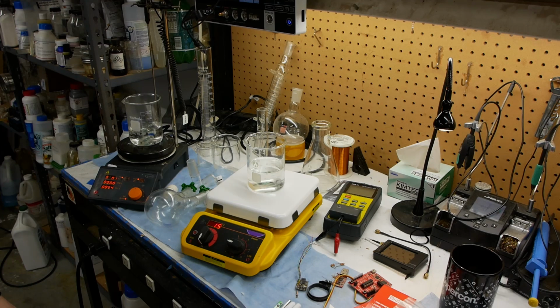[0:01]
Today on Applied Science, I'd like to show you this proof of concept that friends and I built years ago. We aren't going to do anything with this, so I'm going to open source the code and schematics here.
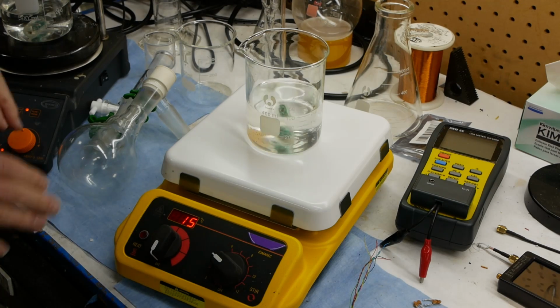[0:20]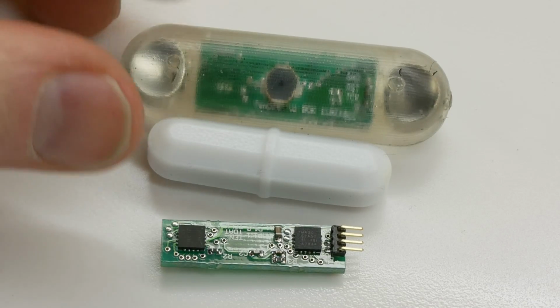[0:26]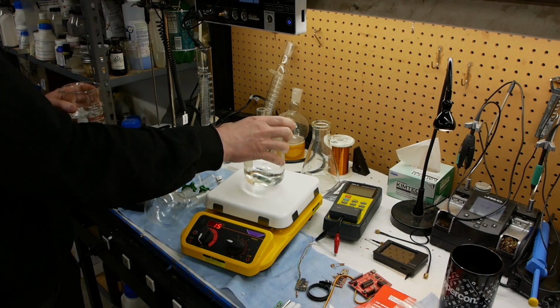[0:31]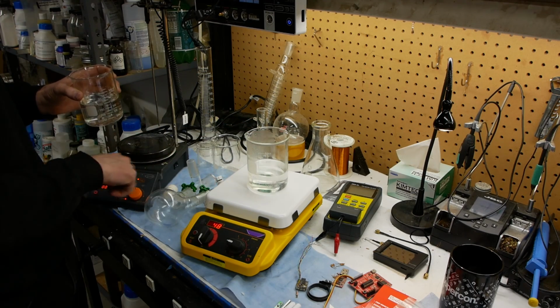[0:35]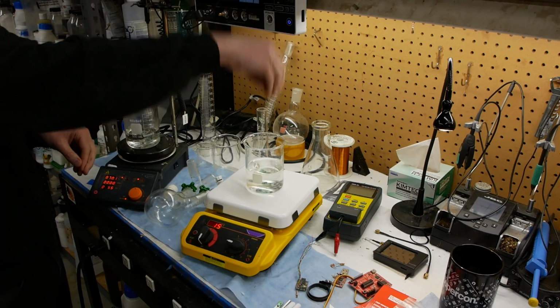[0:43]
So what is this? This is an off-the-shelf laboratory stirrer hot plate that I've outfitted with an RFID reader in the base and a temperature sensing RFID tag embedded in the stir bar. If we put a different beaker on with another stir bar in there, it reads the new temperature of the liquid. This is warm water. And then we go back to room temperature water, it reads the tag and comes back down to 15. So this solves the problem of needing an external probe that hooks around and gets in your way.
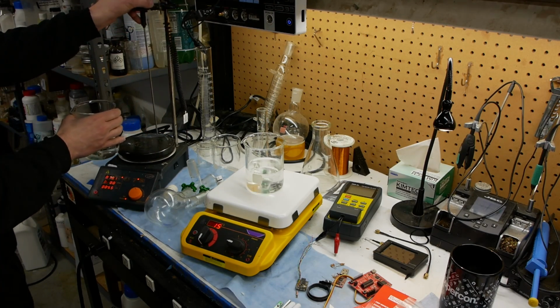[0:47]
This is kind of the state of the art here. Normally what you have to do is unhook the probe and then put the probe down into the liquid like this. And as you can see, it's really quite janky and sort of a pain in the butt. And more than just an annoyance, you can see I'm fiddling around with this. It is quite annoying if you're in the lab and you actually have to take a beaker on and off quickly. Saving just that little small amount of time is worth quite a lot because you have to go through it so many times.
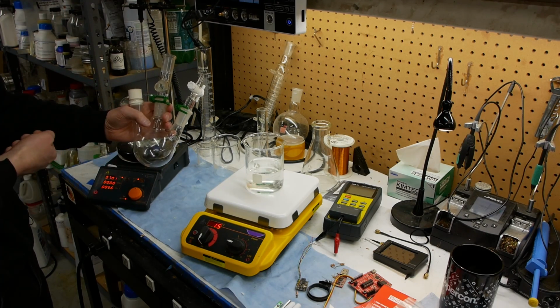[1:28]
Also, if you're doing air-sensitive chemistry, you might be working with a three-neck flask like this, and you might have a condenser hooked to here, and inert gas hooked to here, and addition funnel hooked to here, and now you're out of ports to put your temperature probe in at all. So being able to measure the temperature wirelessly saves you both time and makes your ability to do experiments much better.
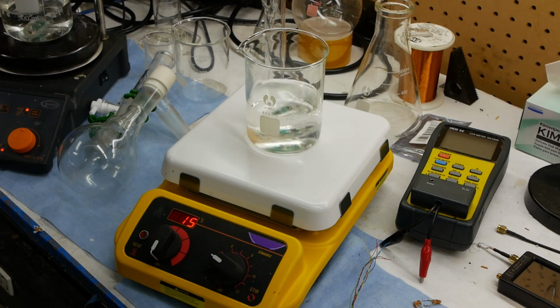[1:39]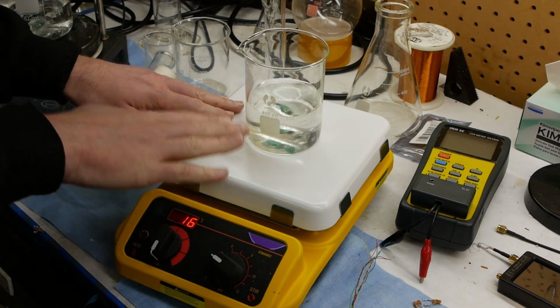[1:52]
Once we've invested in putting some electronics into the stir bar, you of course can sense all kinds of other things other than temperature, things like pH or ORP or turbidity. But even something as basic as traction on the stir bar, we can sense. If you speed up a stir plate, it stirs faster and faster until the bar launches off because we've lost traction. It can't spin that fast. With our method, the machine now knows that it's not in radio contact with the bar, and you can program the machine to automatically slow back down and catch the bar again. And now that it's lined up again, it's reading out.
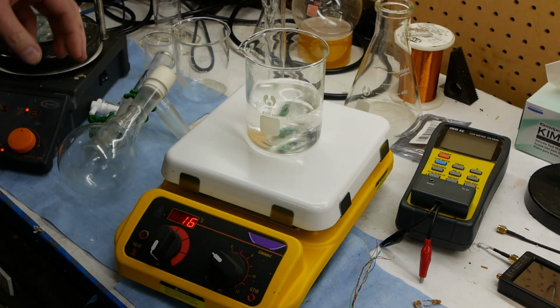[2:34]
As we'll see, we're going to do a teardown a little later. The read range and the concentricity of the coils together, the transmit coil and the tag coil, have to be pretty good. So you could sense that it's lost traction with other sensors or magnetic field sensors. You can see it's not hooked up anymore. But this is one way of just very quickly detecting whether the stir bar is still in magnetic contact with the motor.
Another idea we had is that you could measure the viscosity of the fluid by looking at the magnetic slip angle. I think some stir plates might actually do this by looking at the torque put into the motor, but this would be a more accurate way of doing it. In the stir bar, you could put a Hall effect sensor to find the magnetic slip angle to see how thick the fluid is.
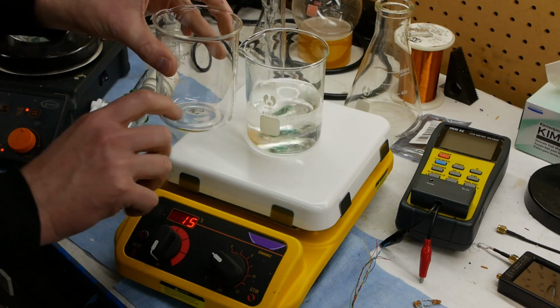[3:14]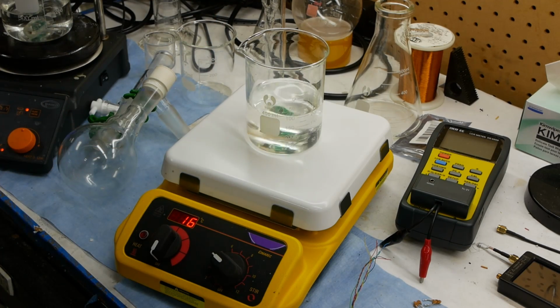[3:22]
Since each tag has a serial number, you could also do some types of auditing or tracking in a lab. For example, the beaker could have a captive stir bar in the bottom. Imagine a glass cage in the bottom that keeps the stir bar as part of the beaker. That way the beaker would have a serial number and could record things like the number of thermal cycles it's been through or the maximum temperature that it's ever been exposed to, potentially how long it's been used in the lab if it writes the date and time to the tag. There can be non-volatile memory in the stir bar itself, which opens up a whole bunch of other possibilities.
Like I say, this is kind of free technology. Once you've already done the work of putting the board into the stir bar, you get all this other stuff, the serial number, the tracking, non-volatile storage, essentially for no additional hardware cost. So it gives you this platform to come up with all kinds of other features.
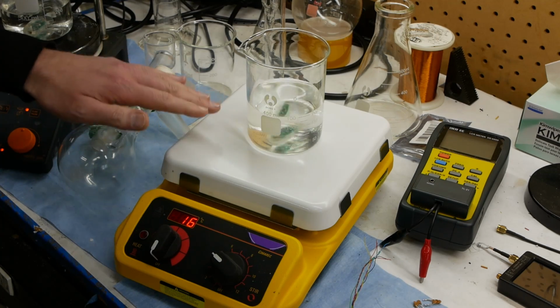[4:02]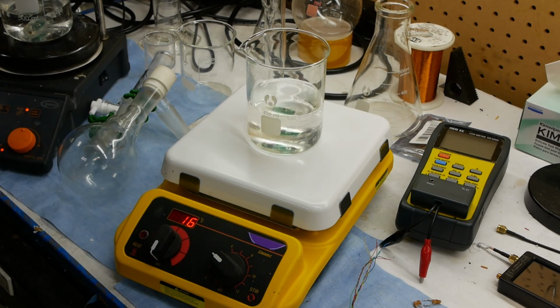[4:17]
Another idea is that you could use a very accurate pressure sensor inside the bar. These are cheap and in every cell phone now, to measure the static head pressure to estimate how much liquid is in the beaker. This could also be a nice safety feature so that if you forget about your experiment and the beaker goes to dryness, it can tell the hot plate to shut off because you've run out of liquid.
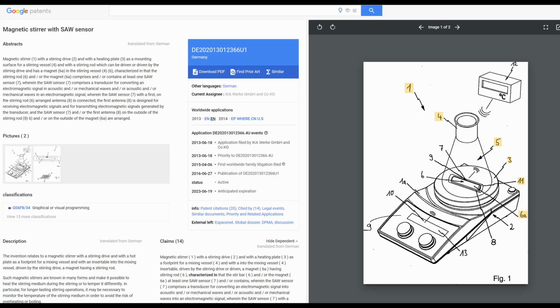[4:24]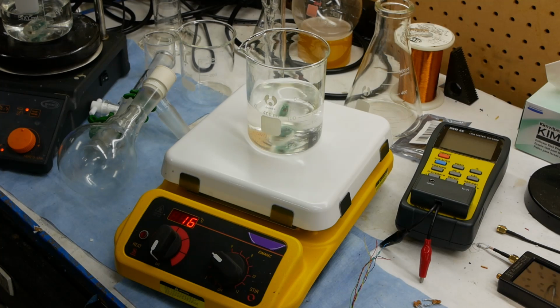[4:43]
Also, a quick note about intellectual property. There is quite a bit of prior art for this. Even 8 or 9 years ago when we were building this, there was a pretty key patent showing a laboratory hot plate stirrer with a temperature sensing bar. The technique they used was a surface acoustic wave filter, not an active RFID tag, so you wouldn't get some of these other features. But there's even more art that's not related to laboratory stir bars, just home cooking appliances, believe it or not, that use RFID tags in the vessel to measure the temperature of what it is you're cooking.
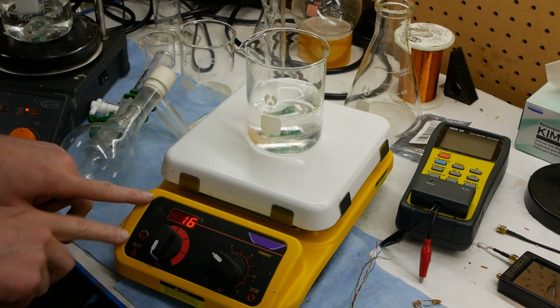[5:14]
And by the way, this thing works the way you'd expect. You can turn the knob up and down, and when you're adjusting the temperature, it shows you the set point. If the set point is higher than the current temperature, the heater comes on and starts to bring the temperature up. And if you turn this down, it flips back to the read temperature.
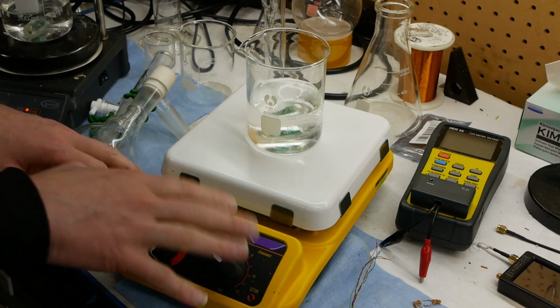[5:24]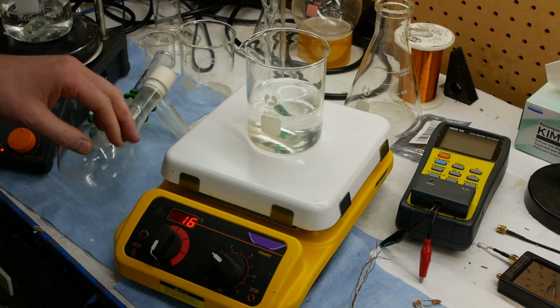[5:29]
And I basically hijacked the whole UI to this. So the display and the knobs go to my own microcontroller that's in here, and then that microcontroller decides whether to turn the heating element on or off. I was pretty proud of that. We'll do a little teardown and show how I basically took over the whole unit here.
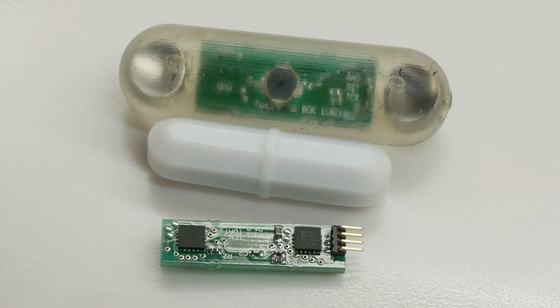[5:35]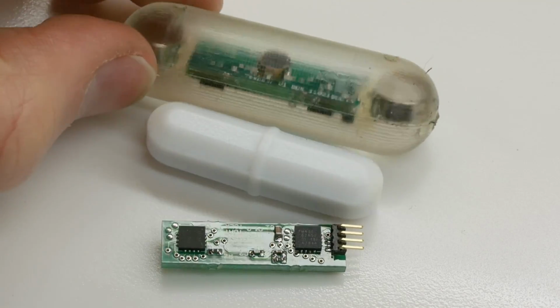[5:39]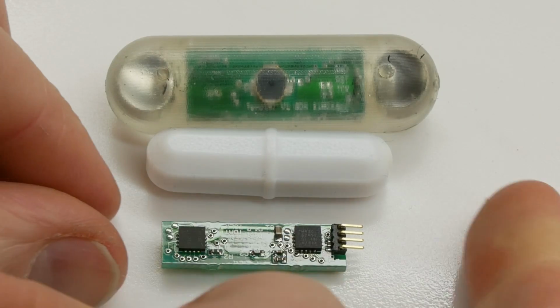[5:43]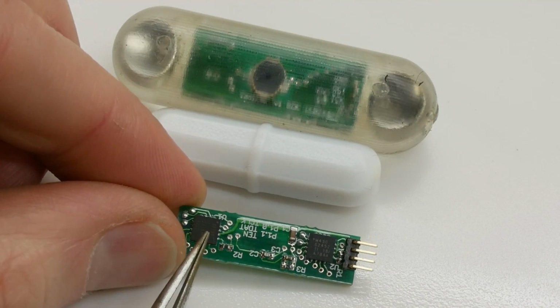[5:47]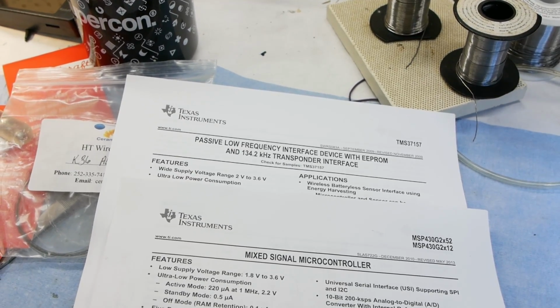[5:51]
Let's zoom in and take a look at the construction details of the bar itself. So here we're looking at our custom stir bar on the top here, molded in clear urethane, just so you can see the guts there. Standard Teflon coated stir bar, and here's the circuit board that's inside there. So you can see that we're using a two-chip solution. This is straight from the Texas Instruments development kit that we used.
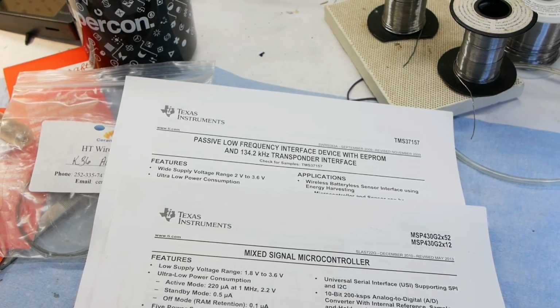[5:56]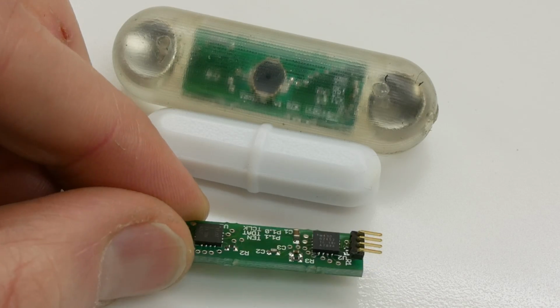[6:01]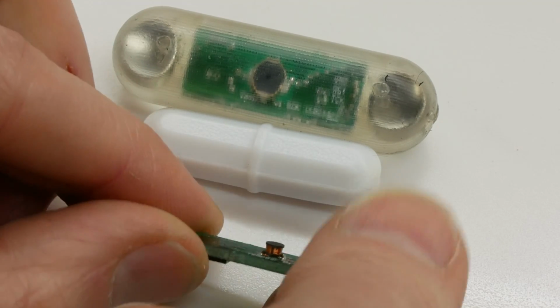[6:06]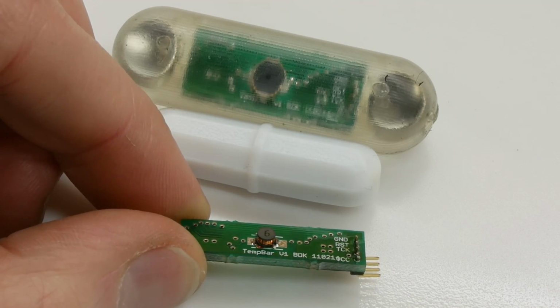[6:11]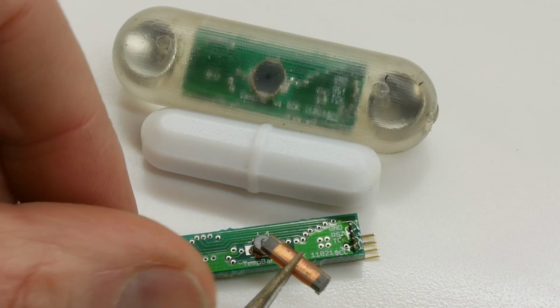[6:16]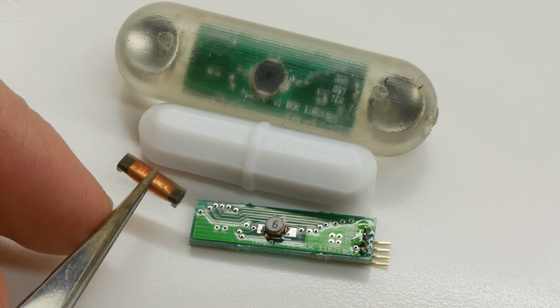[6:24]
One chip does the radio frequency rectification and power extraction from the RFID pulse, and then the other chip is just a standard MSP430 microcontroller. Very few other components, and interestingly, that is what we are using as the tag's receive coil. It's just a standard off-the-shelf inductor, and the reason we had to do that is because a standard 134 kilohertz RFID tag, this is low frequency by the way, looks like this, and it doesn't work if the coil is oriented this way.
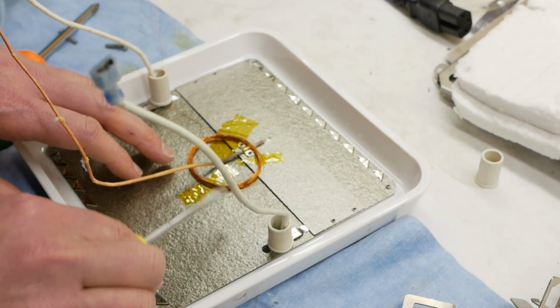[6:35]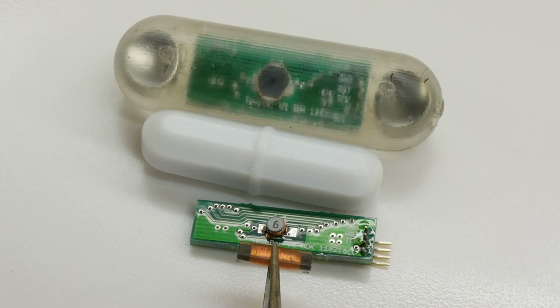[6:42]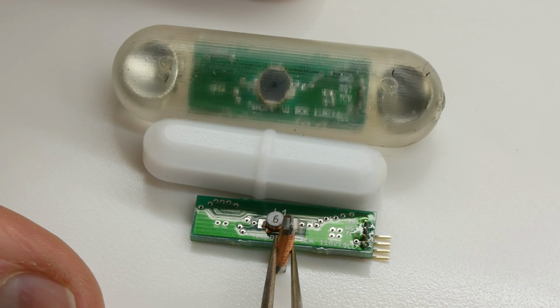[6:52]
Our read range has to be pretty good. The coil in this base station below the ceramic top here is fairly far away just due to the physics of how big your flask is. And if you've got a round bottom flask, you're not going to get the bar really close to the thing here. And if the coil is perpendicular to the transmit coil that's in the base, you don't get any reception. So it really has to be oriented this way.
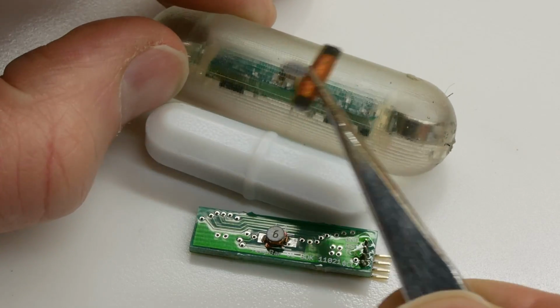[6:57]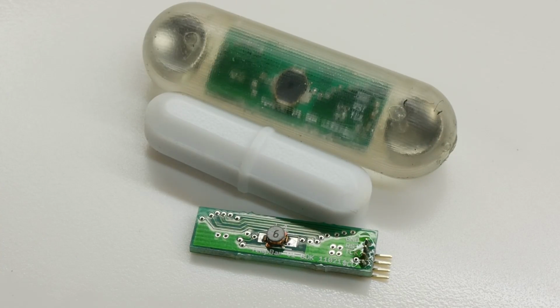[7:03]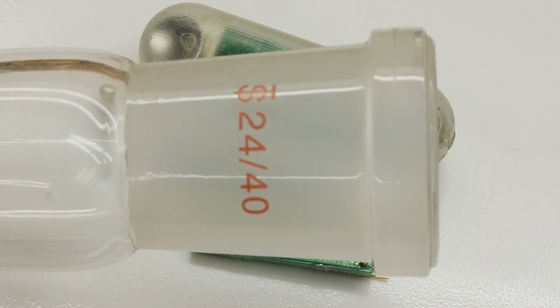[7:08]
And now it's a little too big for a stir bar, even this giant one that we've overmolded. It's going to get really close to the edges, and we knew we had to get this even smaller. One of the requirements here is that the stir bar fits through the neck of one of these flasks, and so you really can't get away with a huge receive coil.
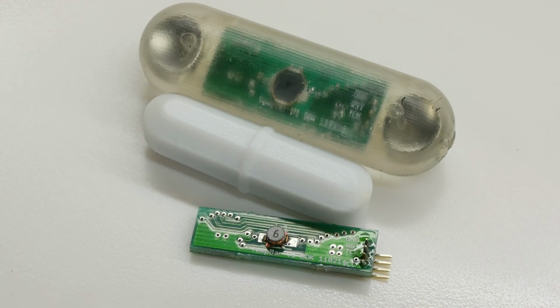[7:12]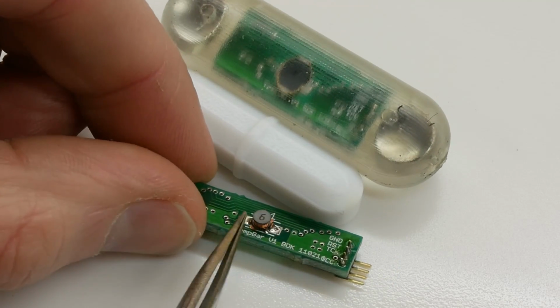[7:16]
I also wanted a really cheap solution. So for example, sure, we could custom wind a coil or something in there, but that is a custom part. The benefit with this is that it's an off-the-shelf DigiKey part that we just plopped down. And it's about a 2 millihenry inductor, so there is some ferrite in the middle there.
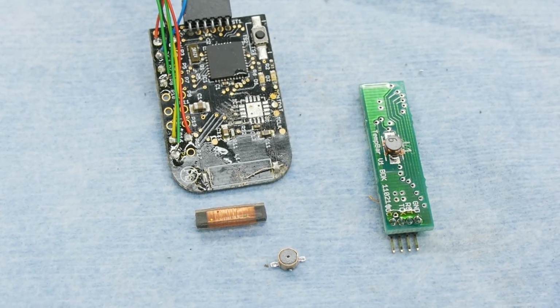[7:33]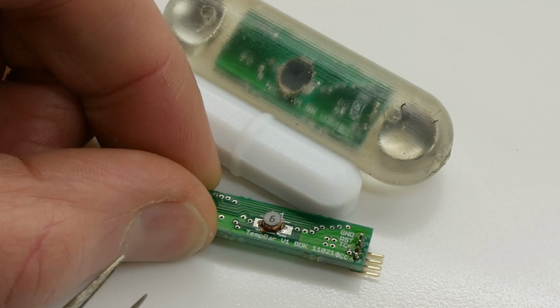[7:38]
And I tested it both with and without shielding. It actually came with a little steel, or maybe soft iron, cage around it. I ripped one off, and it didn't seem to affect the read range all that much.
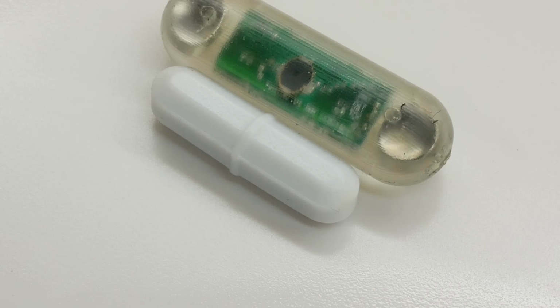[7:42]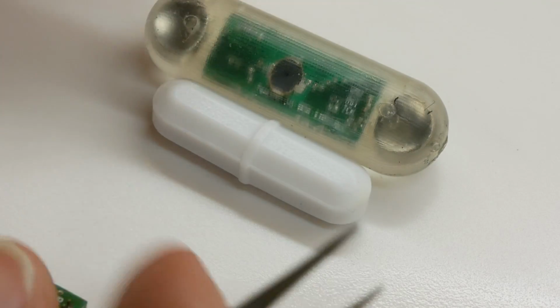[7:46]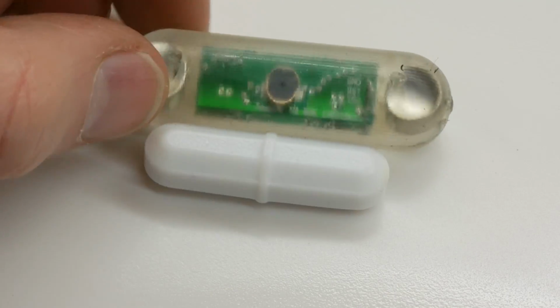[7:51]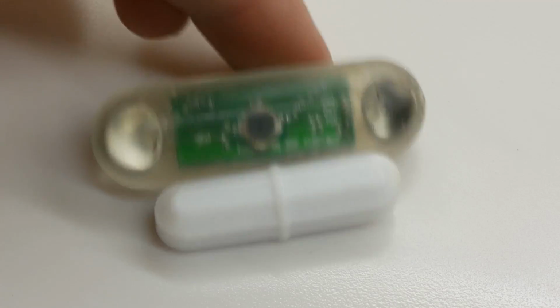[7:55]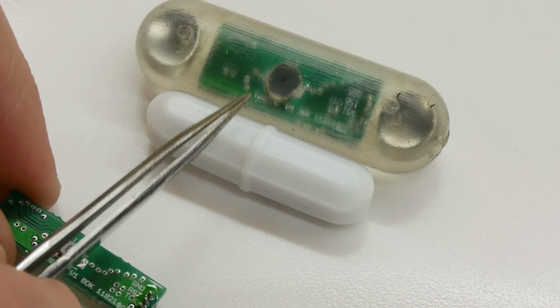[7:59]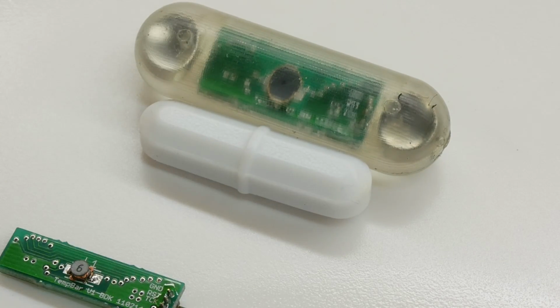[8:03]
One of the other benefits of doing this in a stir bar system like this is that the magnets actually enforce pretty good concentricity of the coil in the base and the coil in the tag. You can see you can push this around, it just keeps pulling it back to the middle. And so that's great, because now the coil in the tag is really guaranteed to be pretty well concentric with the transmitter in the base.
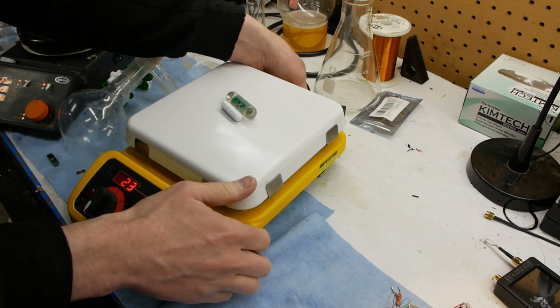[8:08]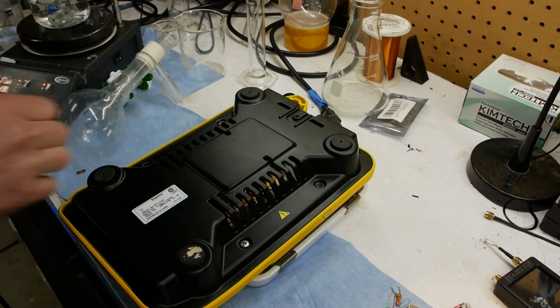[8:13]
Let's do a teardown of the base station so you can see what's going on in there. I know there's actually one interesting bit of history that you're not going to want to miss.
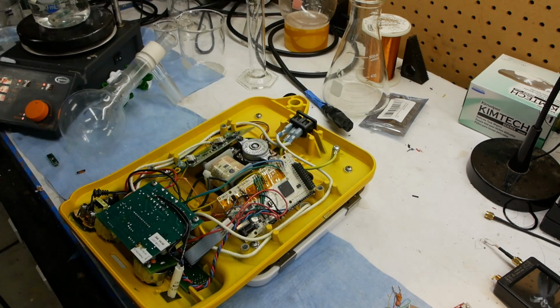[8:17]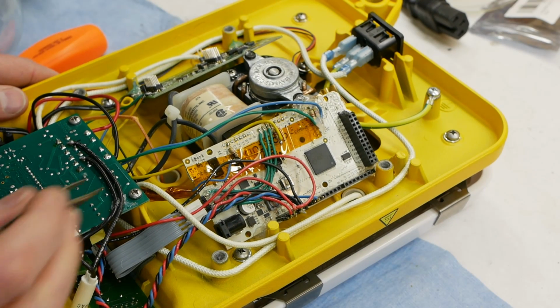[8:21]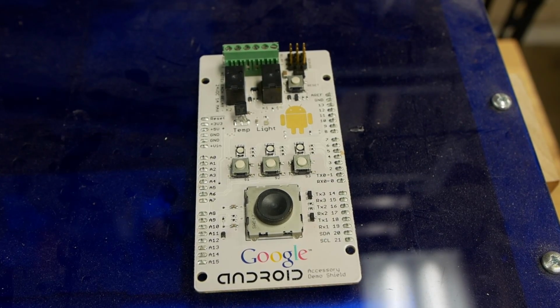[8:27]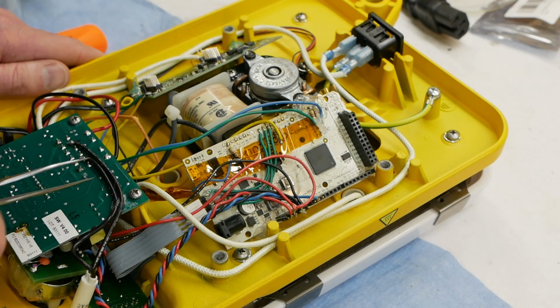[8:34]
Take a look at this. This is an Android developer kit in the form factor of an Arduino Mega. It's funny, I must have had two of these, because one of them had a six-color silk screen to get the Google logo in the colors that you would expect. This one's just single color, so this must have been the cost-reduced version or something. But I thought that was kind of funny.
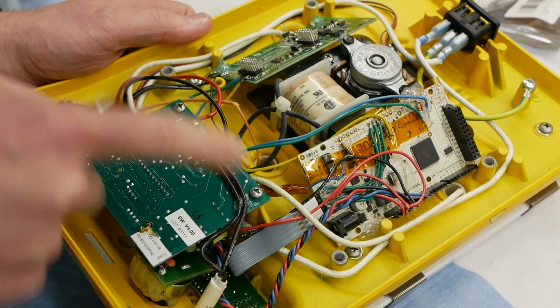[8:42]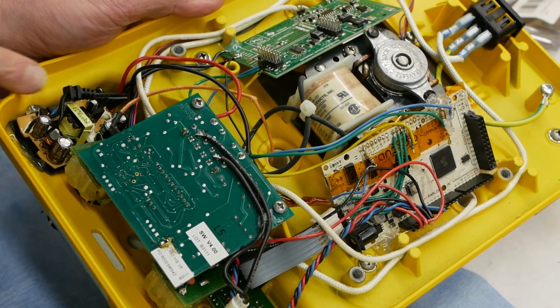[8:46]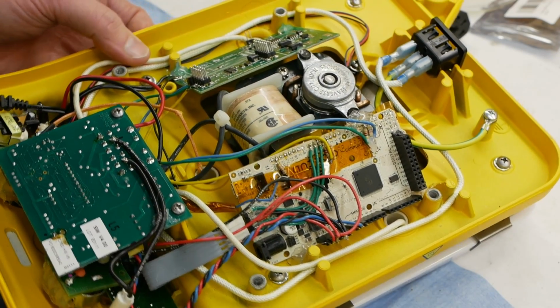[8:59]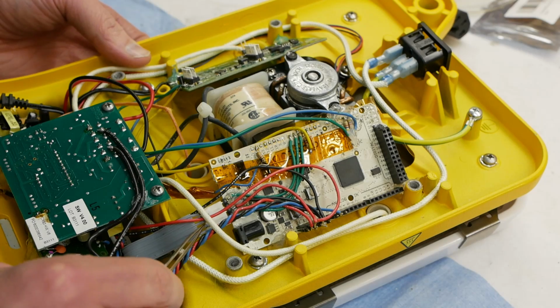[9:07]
This is a stock circuit board that does the original hot plate's work. I added this, which is a wall wart power supply to give me a low voltage for the microcontroller and electronics that I added. And this is the Texas Instruments development kit that connects to the antenna or the coil and then sends the data back to the Arduino Mega. And this is what does the PID loop control and the interface, so the generation of the characters that are shown on the display, which come out and go through this.
So originally, that 7-segment display was controlled by this board. There is some amount of logic out here. And I just unplugged it and plugged it into the Arduino and conveniently figured out what the signaling scheme is with these cables here.
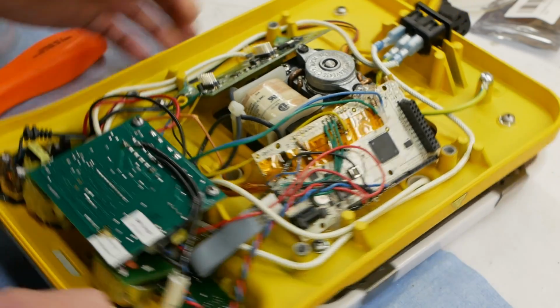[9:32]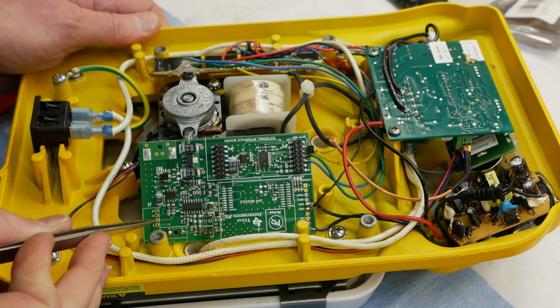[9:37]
I even forget exactly what it is, but I guess it wasn't that hard to reverse engineer. And then the potentiometers for the set of things also go into the Arduino. So let's spin this thing around, and you can see what's going on. This board, the base station coil, is just these very fine wires that must be hard to see on camera, but we'll zoom in and take it apart. And it goes to a coil that's concentric with the spin axis of the motor.
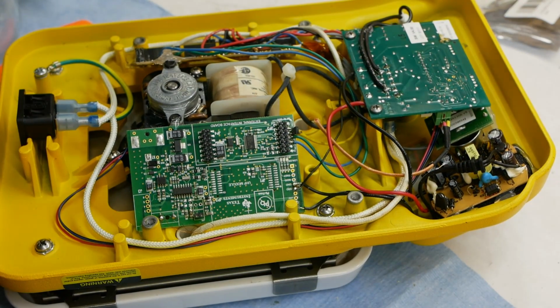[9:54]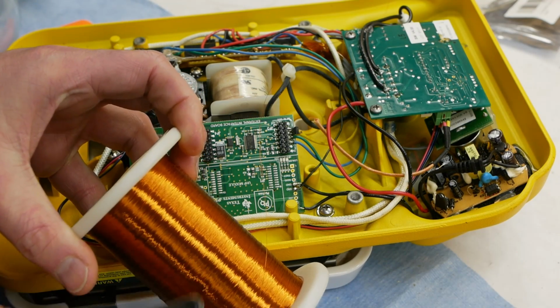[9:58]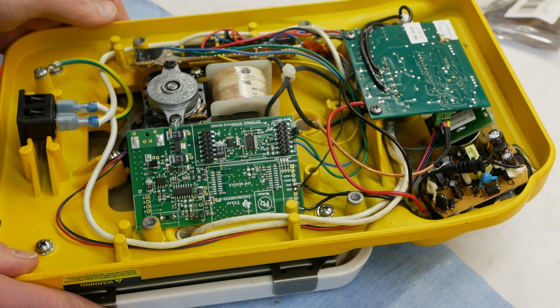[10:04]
And for this prototype, I just used plain old magnet wire. But this is another interesting construction detail. You can't really get away with this. Even high temperature magnet wire is only good for 100 or 200 degrees C, but the hot plate itself can easily get up to 500 or 600 degrees C.
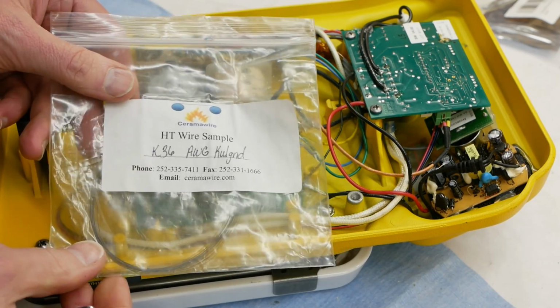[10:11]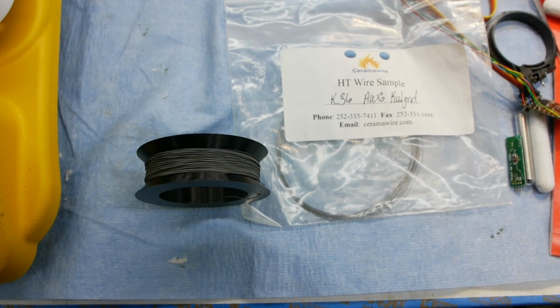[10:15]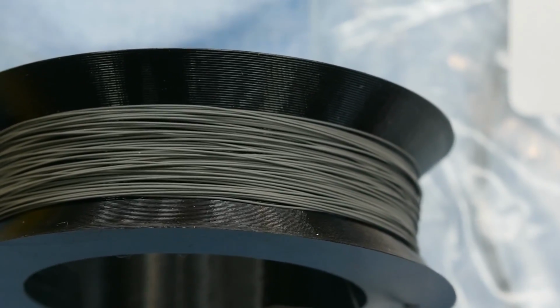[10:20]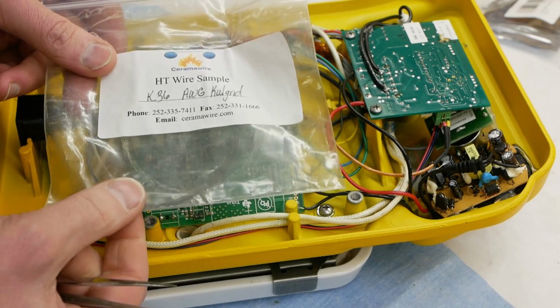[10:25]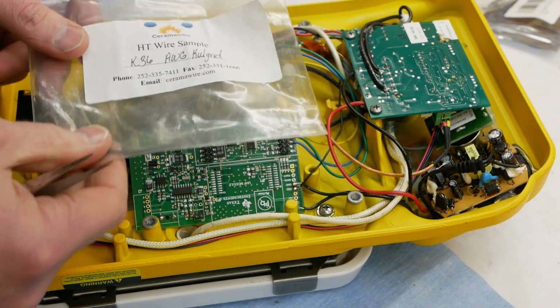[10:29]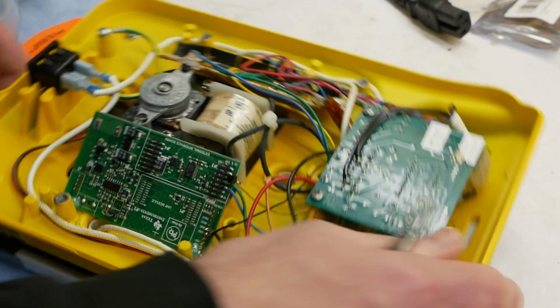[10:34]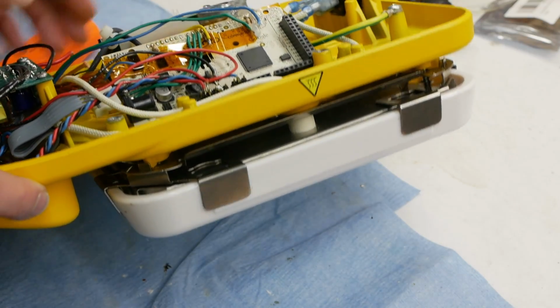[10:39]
We had a great solution for this though. There's another kind of wire that's ceramic coated. I guess you could call it magnet wire, but it's not coated with resin or a polymer, it's coated with a ceramic. So this can easily go up to 500 or 600 C, and it's very thin so that you can sort of jam it under the heating elements and still get it close to the surface to get a good signal from the tag. So let's keep taking it apart so you can see what's going on. If you've ever wondered how these things are built with the metal clips and everything, you'll see all the construction.
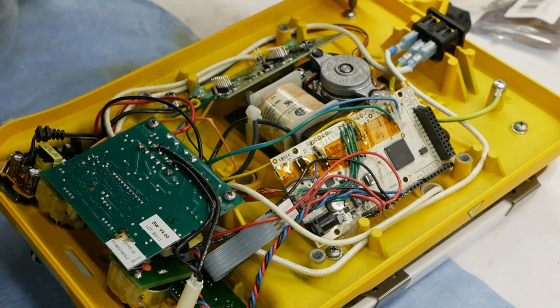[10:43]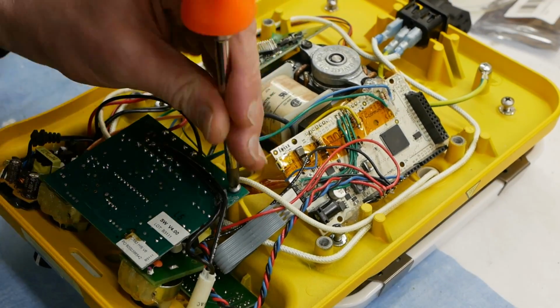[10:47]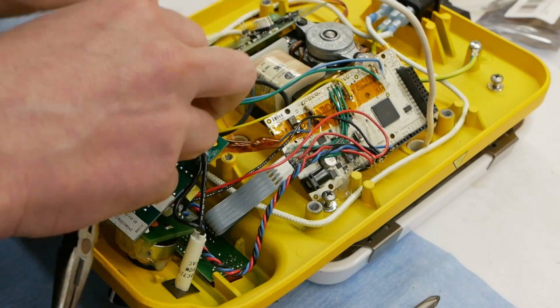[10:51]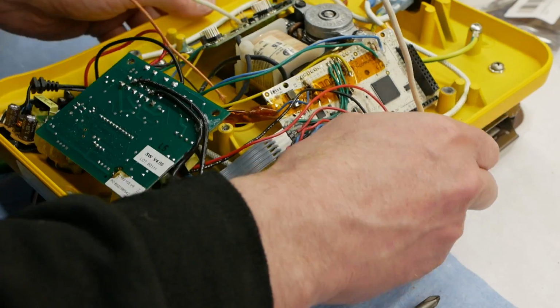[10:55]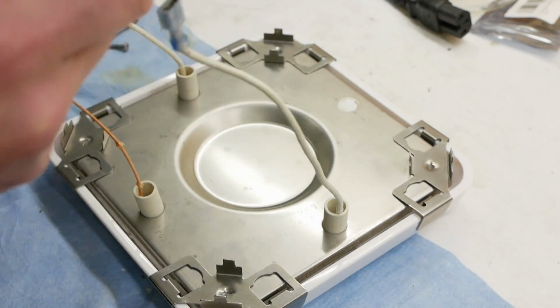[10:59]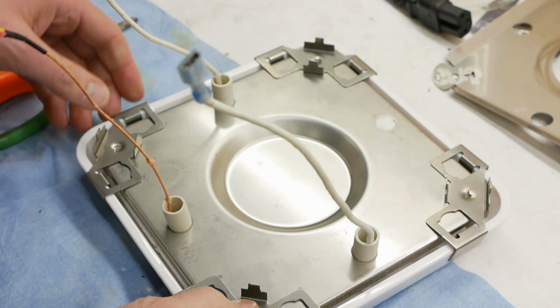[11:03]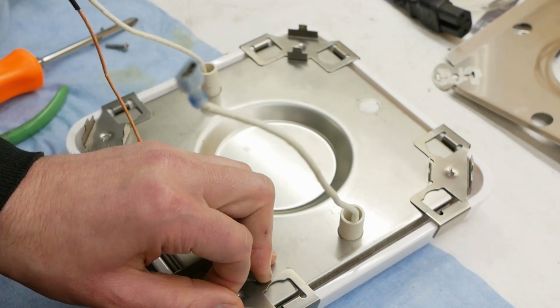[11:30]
So you can see here, we've got obviously the heating element, these two, and then the coil that I added, these really fine magnet wires here. And this is a thermocouple so that the machine knows not to overheat the element. So the idea is that if you want to heat your beaker of water up to 100, it just slams the heater on full, and eventually this will get up to a high enough temperature where you don't want to overheat the elements. So it needs to know the temperature of the elements just to avoid overheating itself.
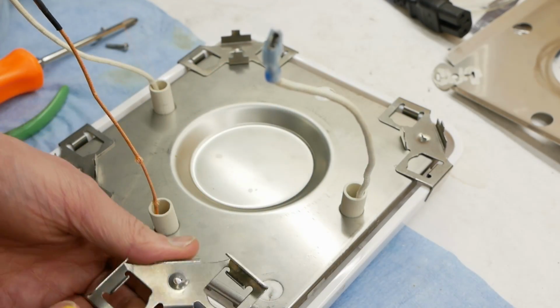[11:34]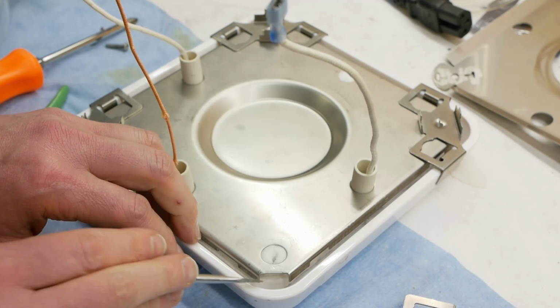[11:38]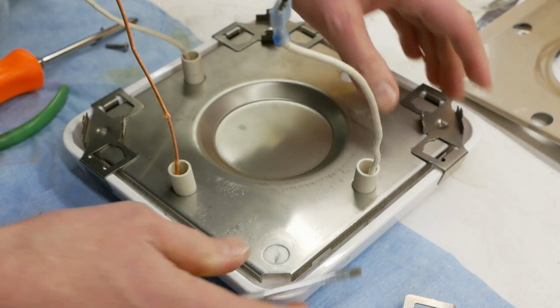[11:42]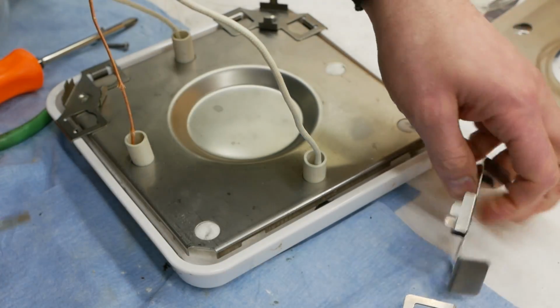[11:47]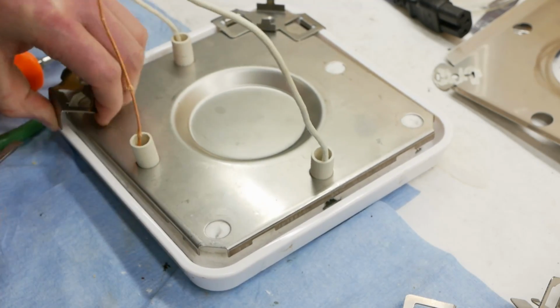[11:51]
I kind of like this construction detail. These stainless steel clips grab onto the porcelain top, the ceramic top, and just put some pressure on here to hold the heating element together. But really, it's just these clips that actually hold the entire machine together. There's no screws or positive fasteners that hold the ceramic on.
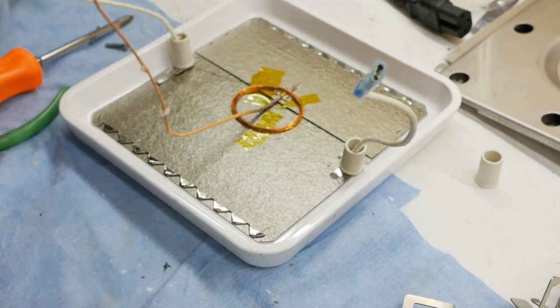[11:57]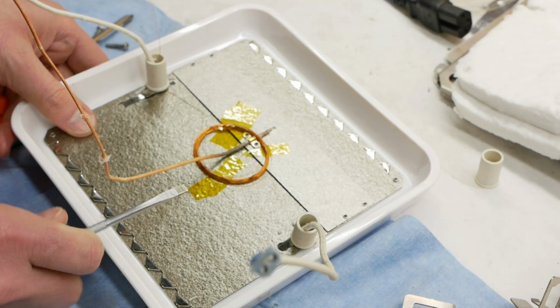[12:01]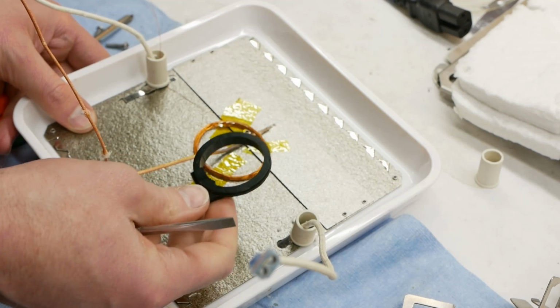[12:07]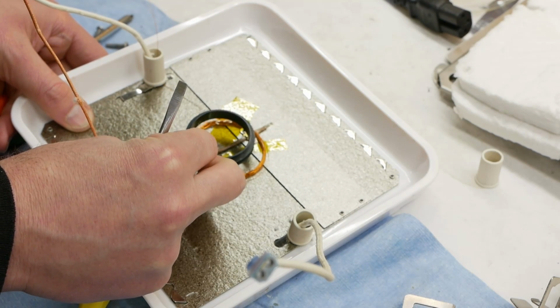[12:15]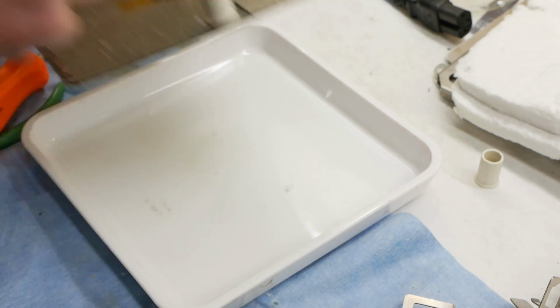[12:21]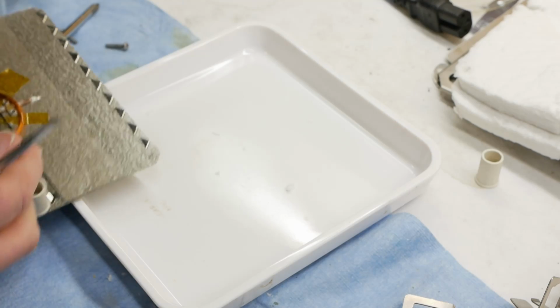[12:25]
And here it is, here's where all the magic happens. This is hardly optimized. I basically copied the diameter and the inductance of the coil that came with the TI dev kit. So it's about 450 microhenries, something around 75 or 80 turns with a 30 millimeter diameter or something like that. And we have the option of putting it underneath the heating element, so directly below the ceramic plate,
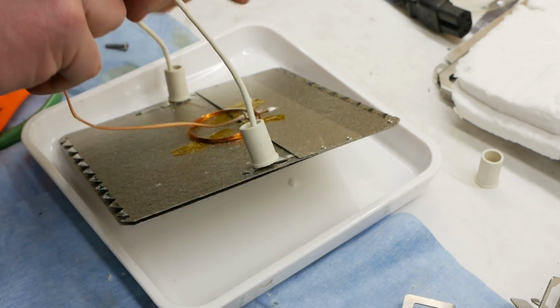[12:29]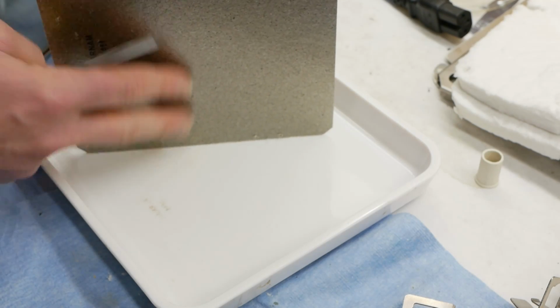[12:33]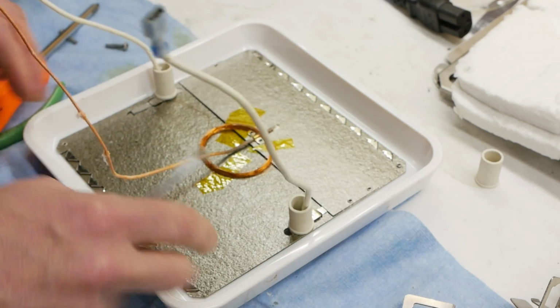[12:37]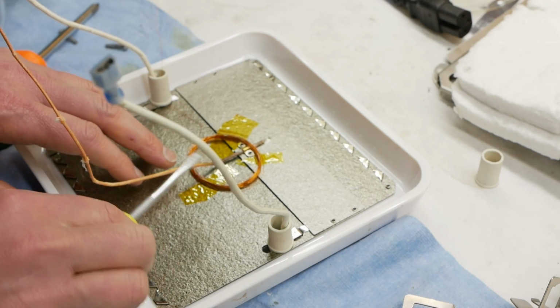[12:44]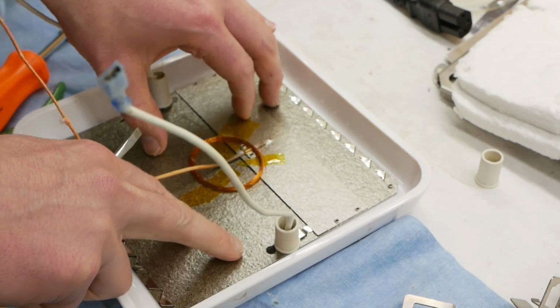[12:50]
or on top here. Now the trouble with putting it below is that the surface of this heating element is made of mica and it's very smooth. And so if you put the coil up on this side, one, it's going to be really hot up there, especially even hotter because the heat might be in better contact with this thing. You might get a little bit of cooling if we put this mica insulative layer there. But it also is just going to crunch this thing a little too hard. This actually sits pretty flush on the inside of the ceramic.
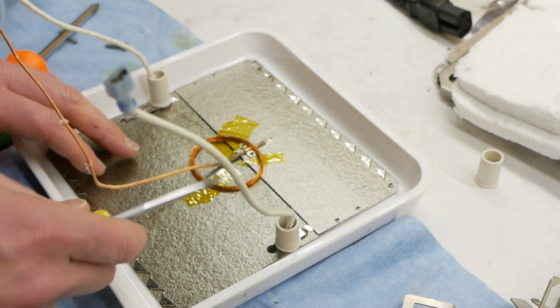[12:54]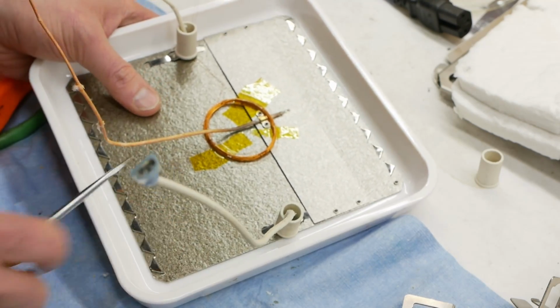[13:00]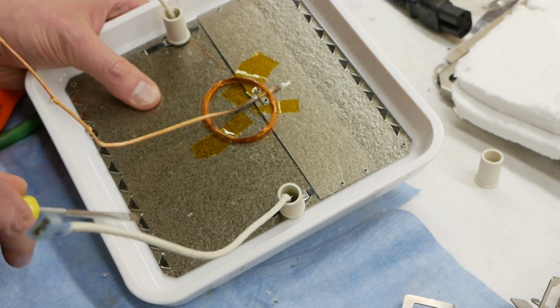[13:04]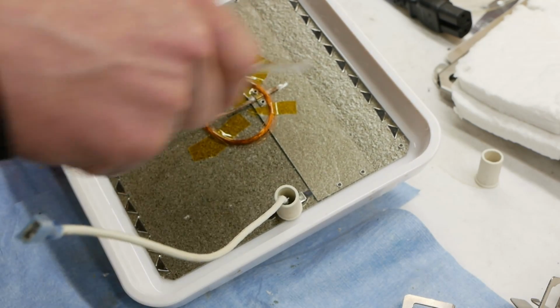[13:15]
So anyway, just for this proof of concept, I found out it worked fine just to put the coil on the bottom. And I don't want to take apart the mica heater, but you can kind of see what's happening here. It looks like there's some nickel or nichrome ribbons that go back and forth. And so the base station coil is able to work even through this presumably fairly dense set of metal bars there.
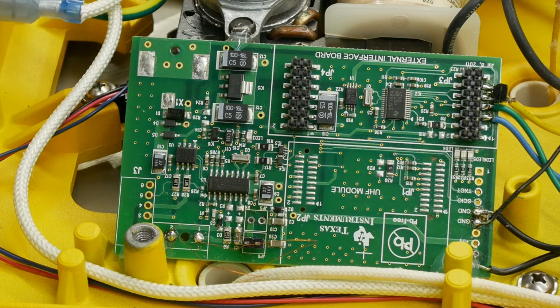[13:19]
Here's a closer look at the RF board. These two connections are where we go to the base station coil, and then there's a couple of jumpers here that allow you to change the tuning capacitance. So remember, this is a resonant circuit, and the coil is about 450 microhenries, and so you need about 3 nanofarads or something for it to resonate at about 134 kilohertz. The manufacturers of this dev board know that you might want to try different coils, though, so you can switch in and out more or less capacitance using these jumpers.
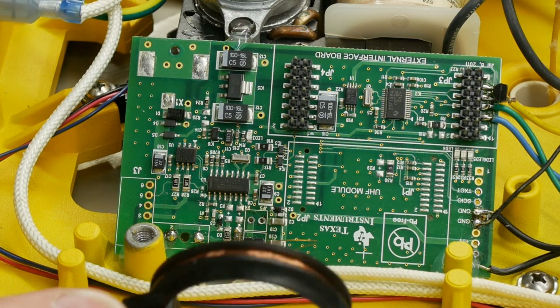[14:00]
Like I say, I tuned it a little bit and realized that making the coil bigger doesn't just automatically increase your read range. You need more power too. And even TI says you might need an external amplifier if you want more. But I never found a great design guide explaining read range, coil diameter, power in, and inductance very well. So I ended up, for this proof of concept, being very happy that it worked with the stock diameter. And obviously, if we're going to go into production, you'd need to optimize that a little bit better.